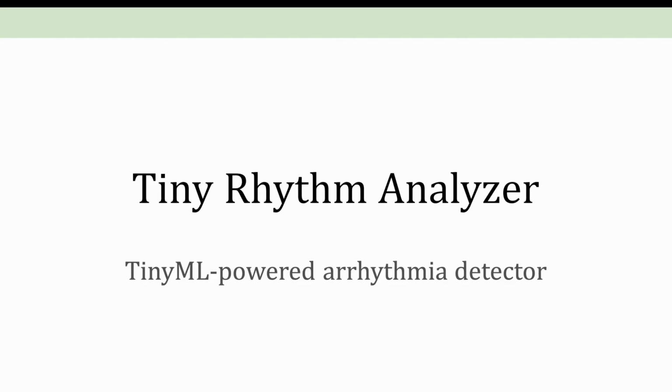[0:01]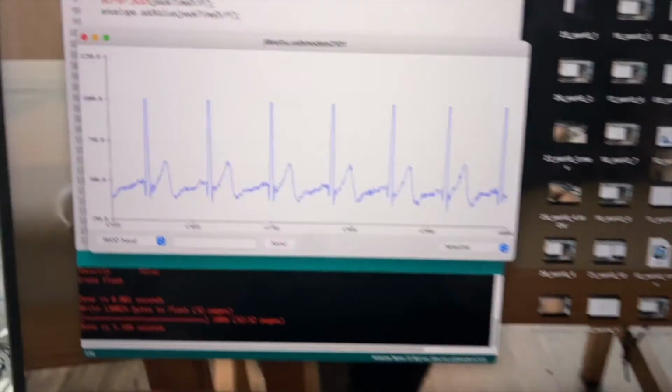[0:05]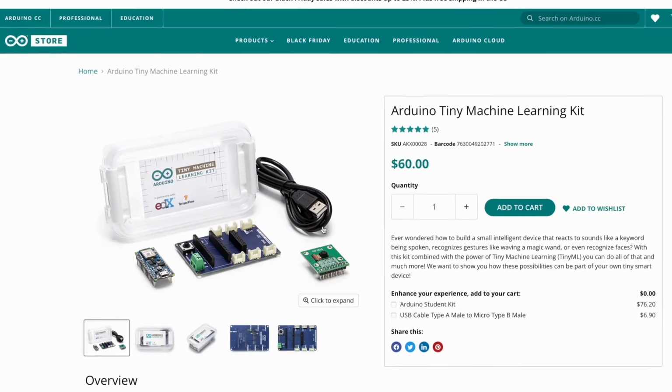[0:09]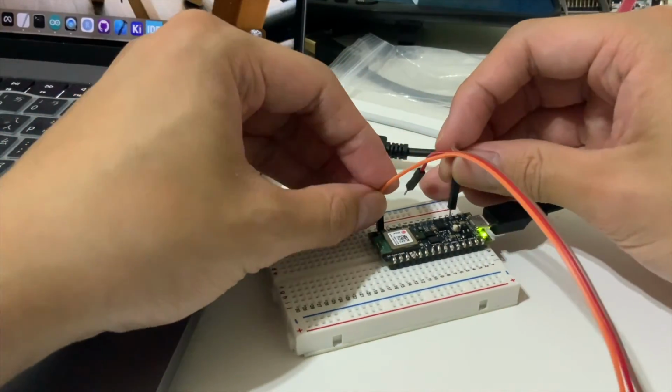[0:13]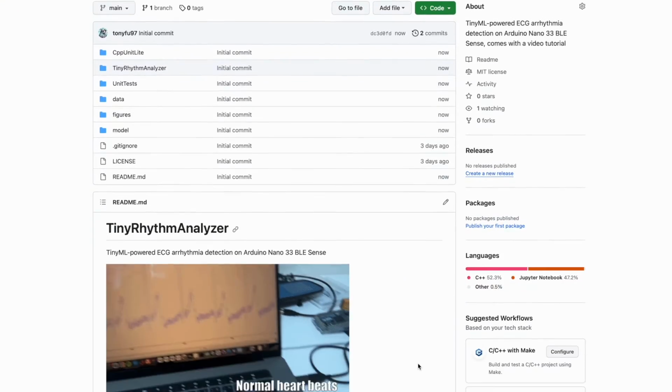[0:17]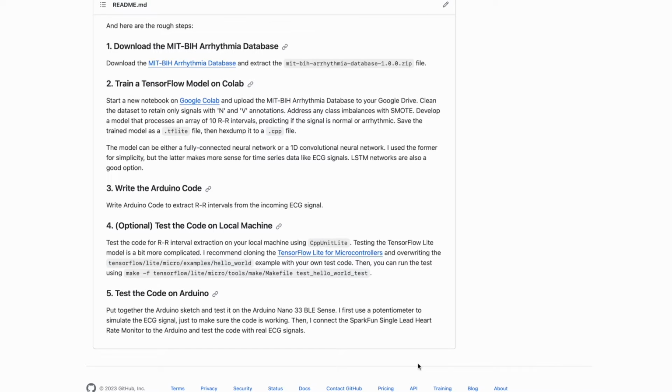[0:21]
Today I'm going to walk you through creating a simple arrhythmia detector using TensorFlow Lite Micro, and we're going to deploy it on an Arduino Nano. It's a very simple project that we can perhaps wrap up in just one afternoon, and I will put all the code I use in this video in the description below, so you can follow along.
So before we begin, we will need a few things. Of course, you will need a computer. I'm using a MacBook, but I think this works on a Windows PC as well. Second, you will need a microcontroller that has TensorFlow Lite Micro support. One such microcontroller is the Arduino Nano 33 BLE Sense, and it is what I'm going to use in this tutorial.
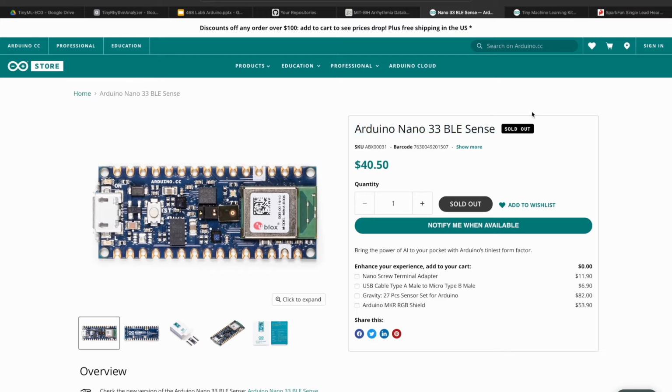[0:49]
But as you can see, this one is sold out. So instead, you can also purchase the Arduino TinyML kit. As you can see, the Nano actually comes with pins in this kit. They also have a dedicated camera module that has TinyML support.
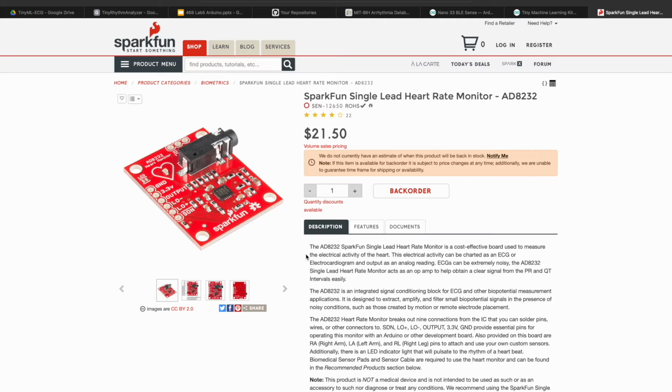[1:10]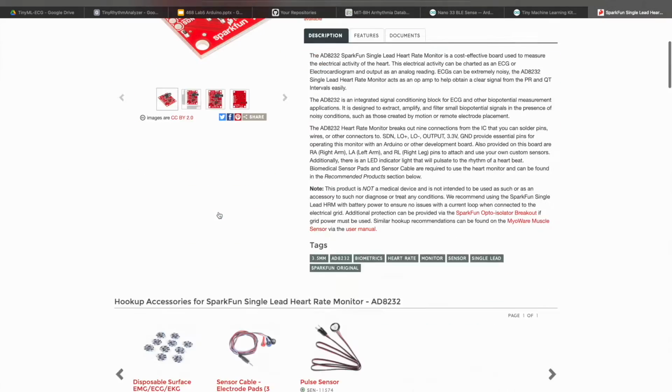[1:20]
We will also need an ECG sensor. I am using the SparkFun AD8232 sensor board in this project. Of course, for that to work, you will need some electrodes, some cables, a breadboard, and some jumper wires too.
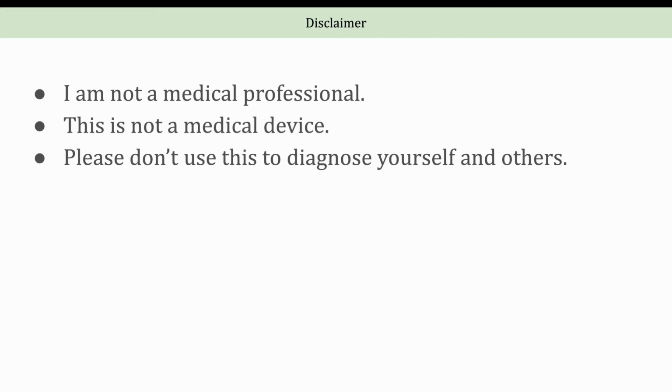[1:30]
Also, I want to be clear, I'm not a medical professional, and this is by no means a medical device. So please consider this as a cool way to dip your toes into machine learning with Arduino, and please don't rely on this for any medical diagnostics.
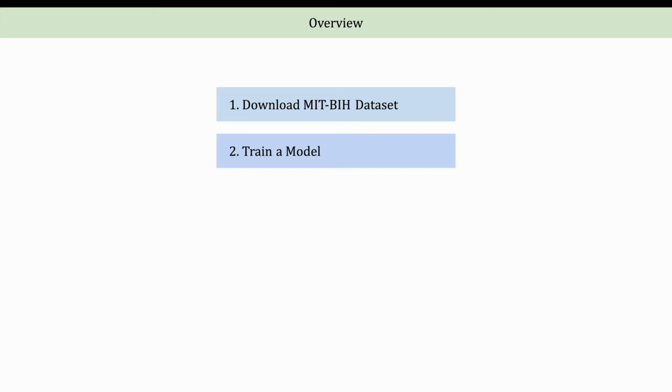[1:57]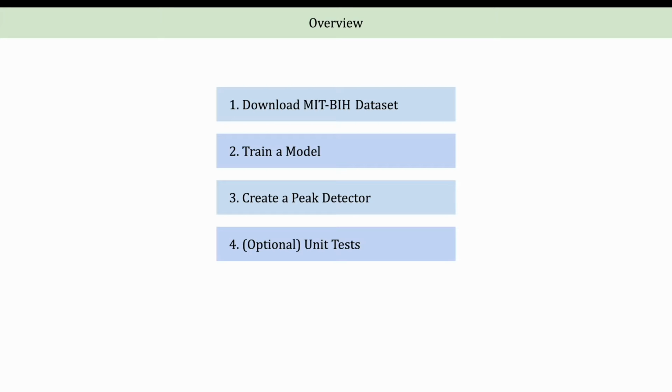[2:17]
So here's how we're gonna do this. First, we're gonna grab some ECG data from the MIT-BIH Arrhythmia database. Then we're gonna train a model on Google Colab with TensorFlow, and we're gonna convert this model into a TensorFlow Lite Micro compatible format. Third, we're gonna do some C++ programming. We will focus on writing classes that allow us to do peak detection in real time. And fourth, we're gonna write some unit tests and run them on our local machine.
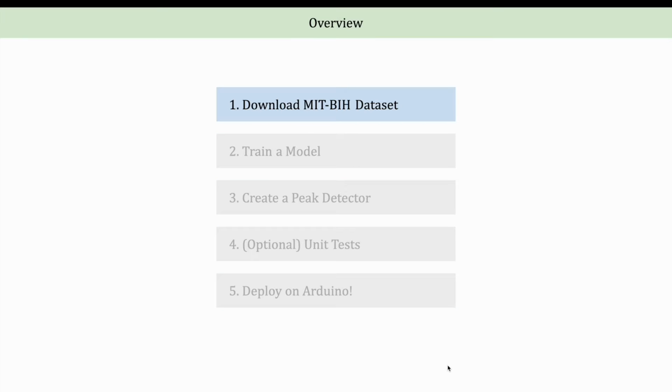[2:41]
This step is totally optional, but I think it's always great to validate our model and algorithm before we move on and deploy it on Arduino. And lastly, we are going to put all the pieces together and deploy the model to the Arduino. And so let's begin part one.
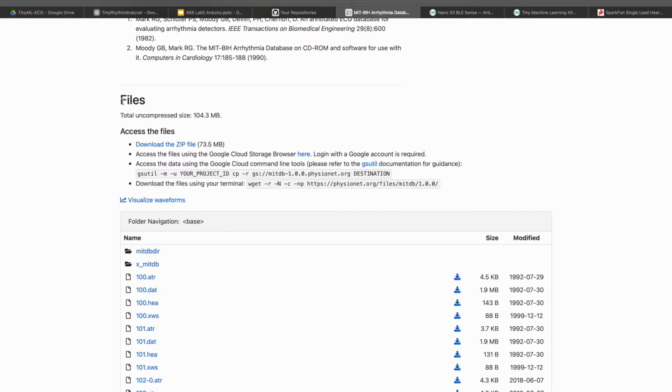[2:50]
Let's begin by visiting the MIT-BIH Arrhythmia database website. We can scroll all the way down to the file section and select download the zip file. And this will download a zip file that contains the ECG recordings and annotations that we need for this project. The website also comes with this waveform viewer.
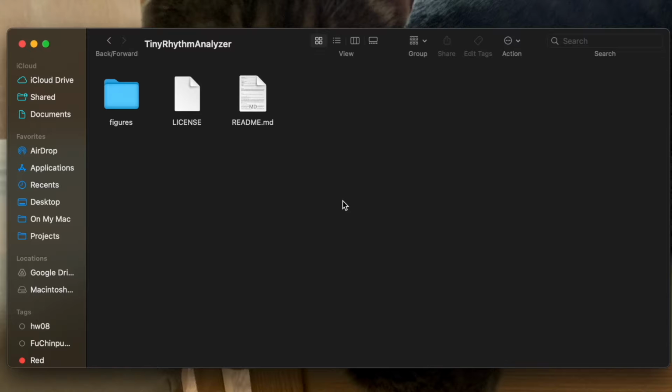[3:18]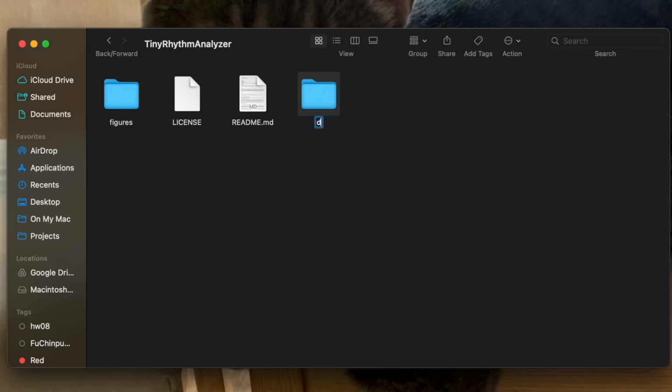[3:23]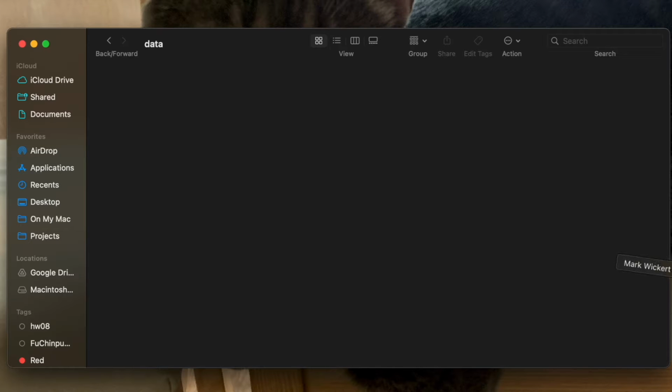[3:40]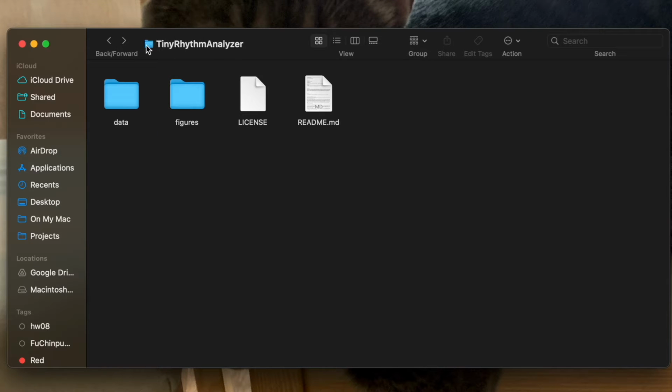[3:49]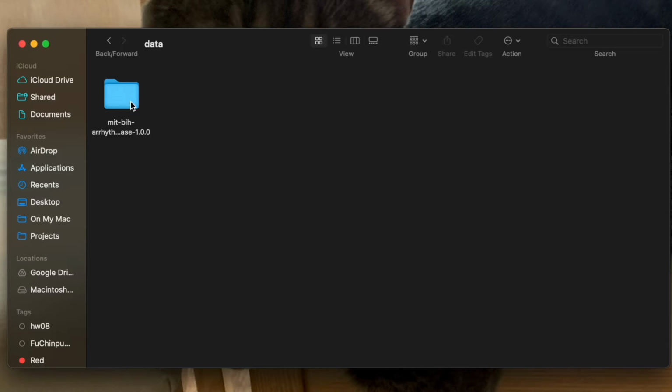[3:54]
If you click on this, it will open a viewer that allows you to visualize all the records contained in this database. So after downloading, unzip the file, and maybe I should create a directory named data. By the way, please ignore all these other things. You don't need this for this project to work. And you can just drop the database folder that you just unzipped into this folder here. So I call my project directory Tiny Rhythm Analyzer, and I just drop in the MIT-BIH database directory.
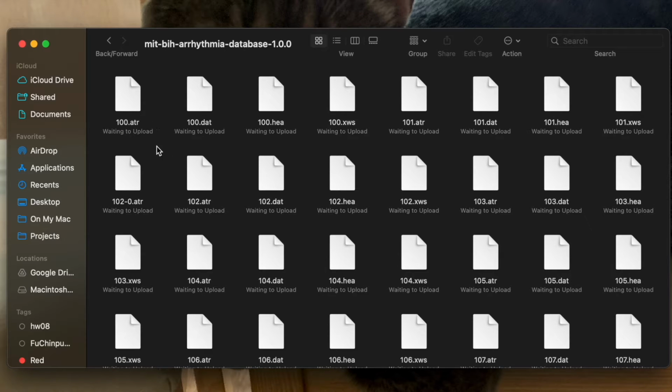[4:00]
You will notice several files. The .dat files hold the ECG signal, and the .hea files are the header information of the recording, and the .atr files contain the annotation, and I think the .xws are for the waveform viewer. We don't really care about that.
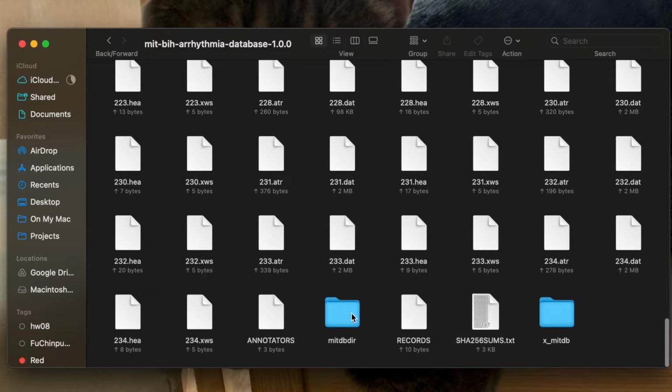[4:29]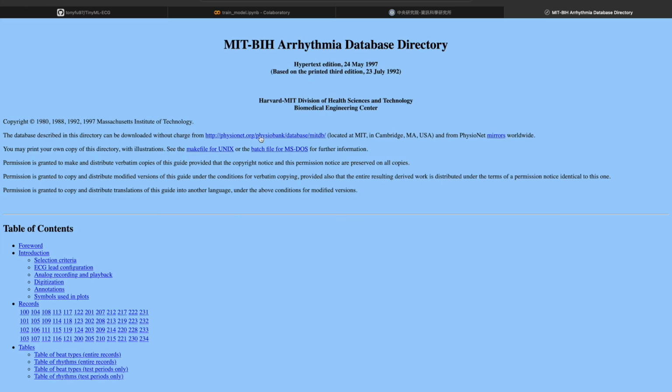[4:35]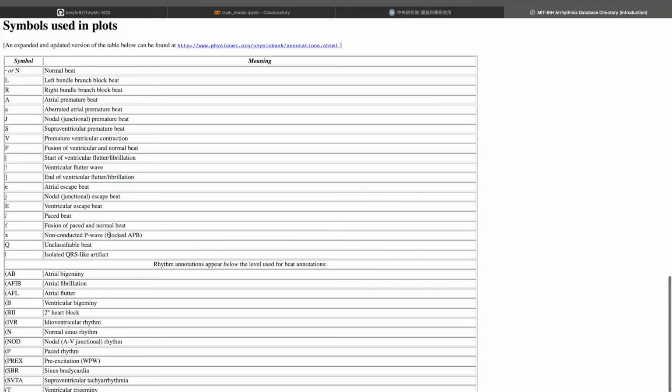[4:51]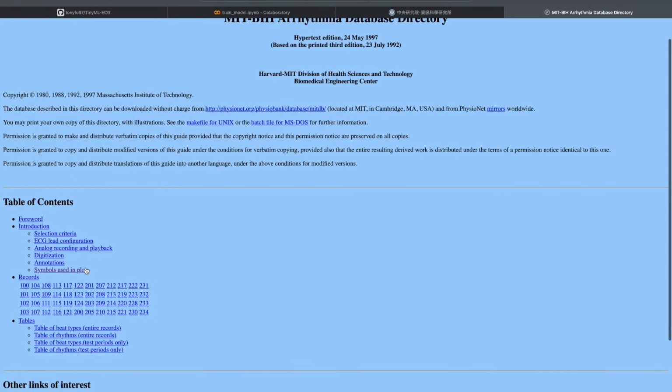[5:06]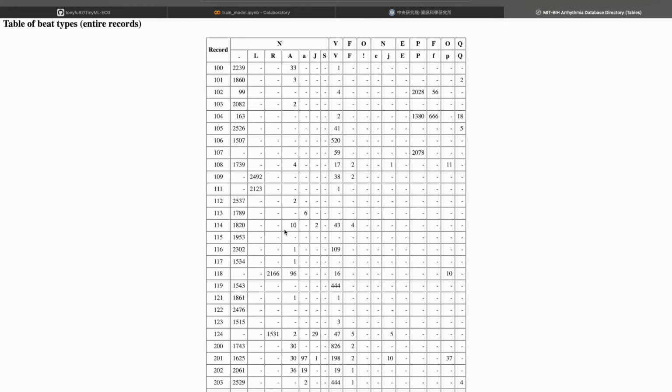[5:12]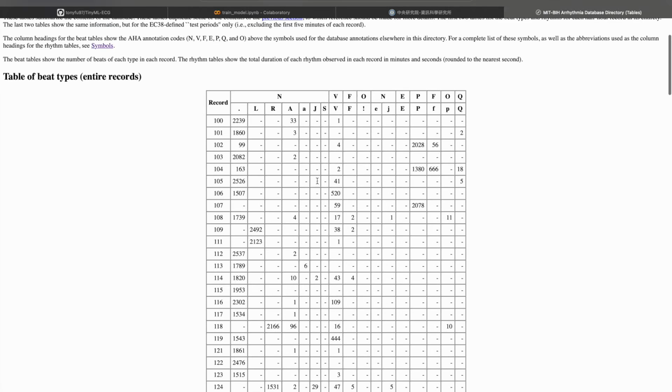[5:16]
And also, we just scroll all the way down. Take a look at the MIT-DB-dir folder, and if we click on this, it actually opens sort of an information guide to the database. You will find details about the database structure and annotation. I will pay particular attention to the symbols used in plot, and this will tell you the meaning behind the annotation codes. For example, N is for normal beat, and V is for premature ventricular contraction. Let's go back. I will also pay particular attention to the table of beat types. It provides a count of each type of annotation across the records.
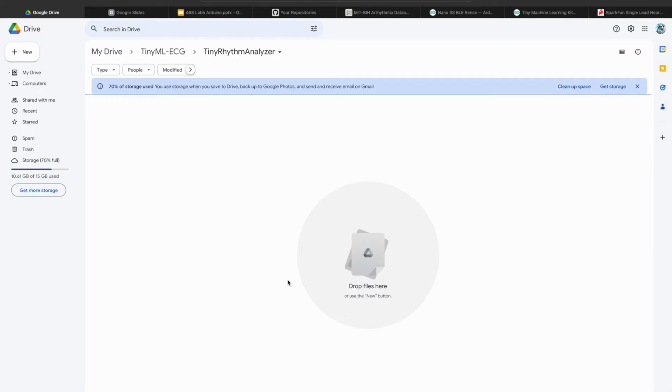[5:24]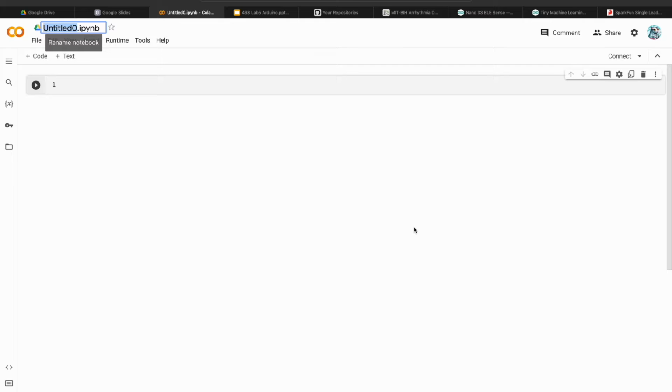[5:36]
So now it's step 2, which is to train a model on Google Colab. So let's start by creating a new folder in Google Drive. I'll call it Tiny Rhythm Analyzer, and within that folder, let's open a new Colab notebook. And you can rename this notebook to be something meaningful. Let's call it train model.
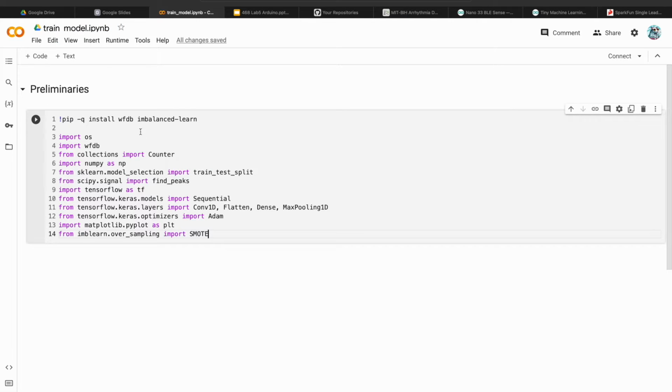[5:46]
So here I added some code to import the libraries that we need. Some of them you might already know, like NumPy, Scikit-learn, TensorFlow. Those are common. Some might be new to you, like WFDB, which stands for Waveform Database. It is needed to read the ECG signal contained in the MIT-BIH database. And imbalanced-learn is a library that handles imbalanced datasets by resampling them. Here, let's run them.
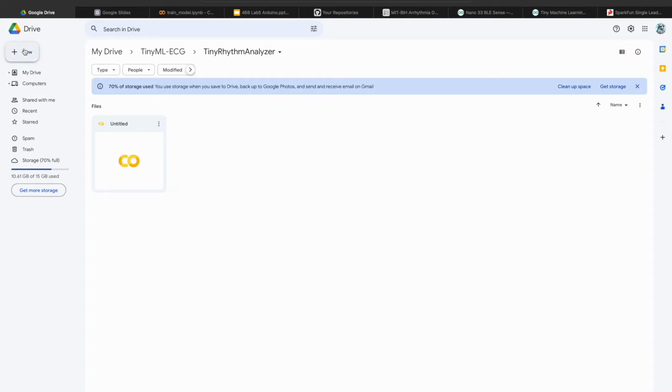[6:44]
Initially, it might take a while for it to connect to a kernel. And the next thing we want to do is to have this notebook be able to access the ECG data that we just downloaded. So what you want to do is go back to your Google Drive folder and upload the MIT-BIH database. And this might take a while, so let's go back to our notebook now.
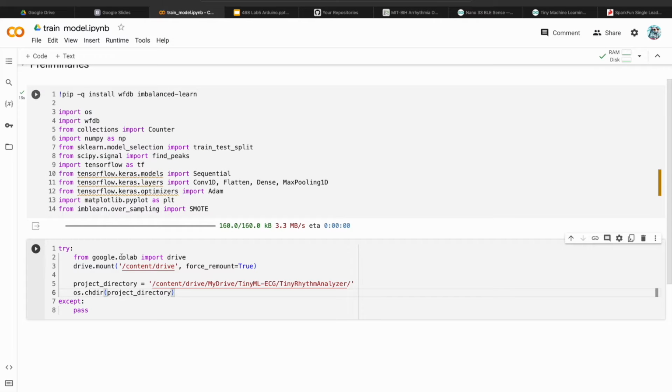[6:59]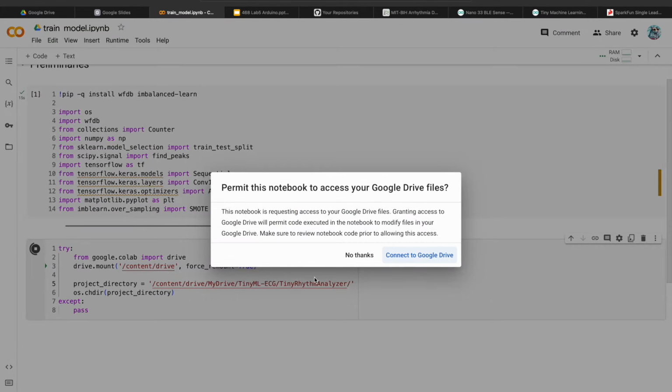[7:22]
And here, another thing we need to do, so here I add this code. It's to mount the Google Drive on this notebook, so that it can access whatever files that we have on the Google Drive. And remember to change this path to match the one on your Google Drive. And now we can run this code, and a window might pop up like this. And remember to click agree on everything. I'm just gonna fast forward.
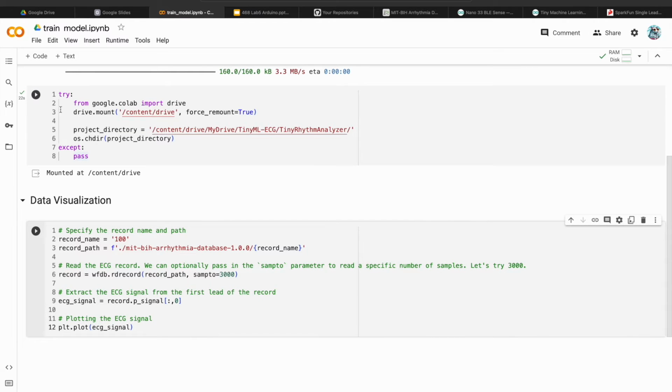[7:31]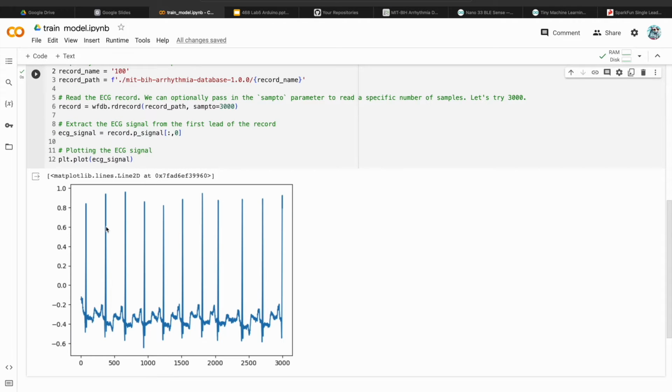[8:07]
And so once the Google Drive is mounted and make sure that all the files from the MIT-BIH database are uploaded, it's time to visualize our data, do some data exploration. We are going to use the waveform database library to read the ECG signal and its associated annotation. And I have added some code over here to read record 100 up to the 3000th sample, and let's run this code. And as you can see, the waveform is being plotted right here.
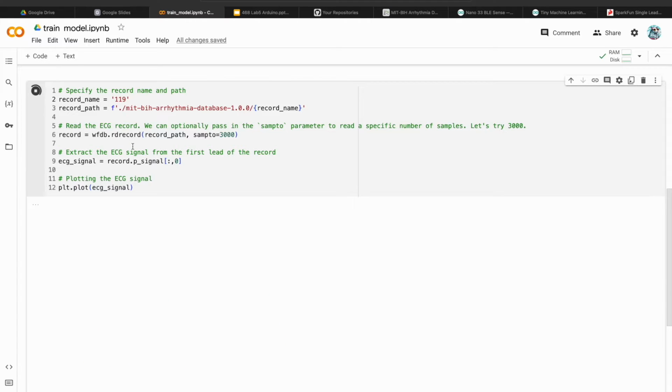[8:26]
So this looks like a pretty normal ECG signal. We can change a variable here to another record. For example, record 119. Let's see. Now, it doesn't really take an expert to see something is wrong with this ECG record. It's not really rhythmic like the previous one.
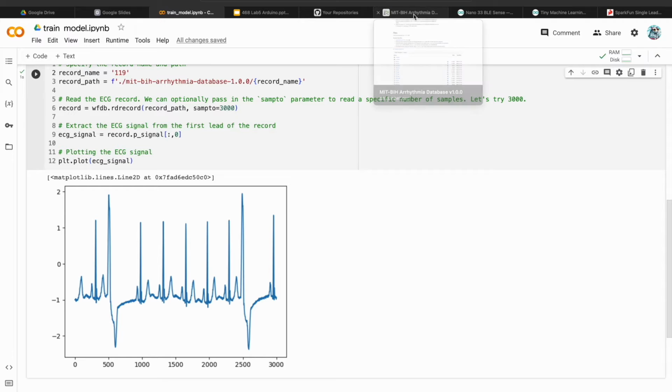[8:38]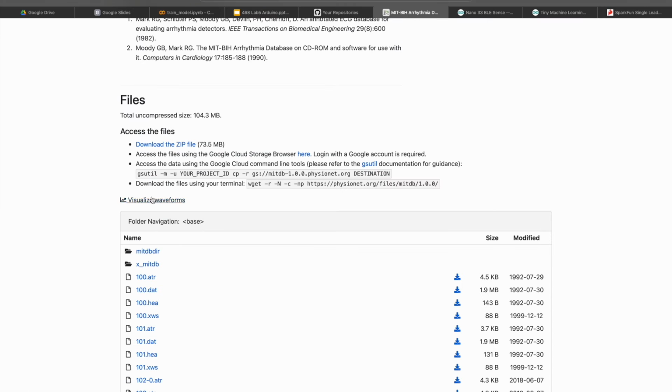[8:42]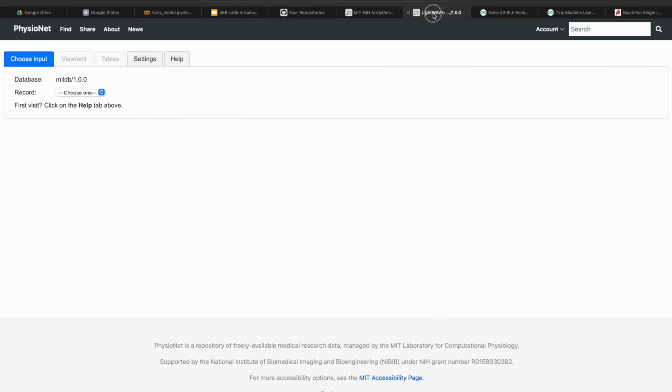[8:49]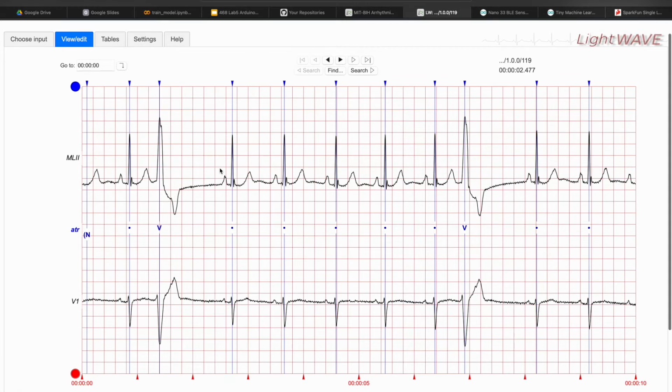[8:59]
So let's go back to our MIT-BIH and open the waveform viewer and go to record 119. And you will see the same signal being plotted right here. And you can see that this is the case of premature ventricular contraction, PVCs. This is the type of arrhythmia where the ventricle contracts prematurely and this disrupts the normal rhythm. In this project, we will make it our goal to detect this kind of arrhythmia with our model.
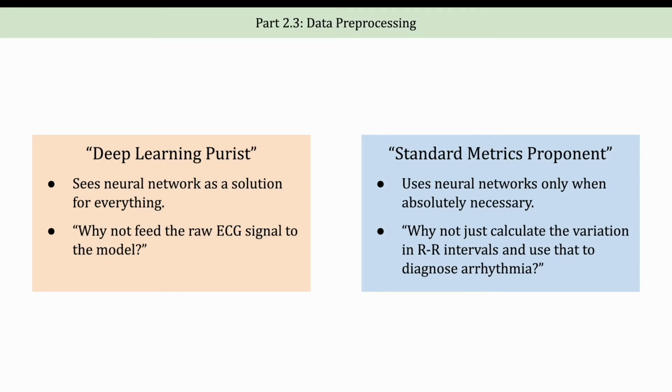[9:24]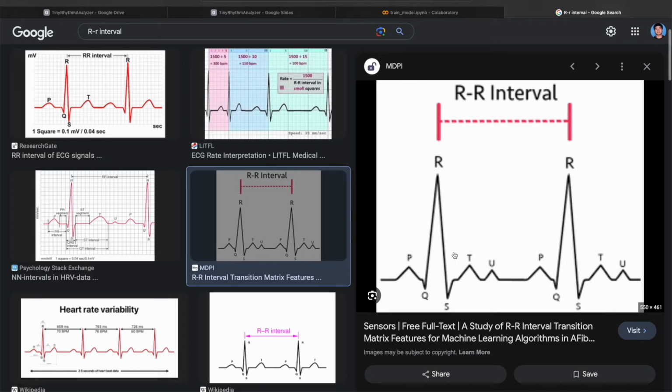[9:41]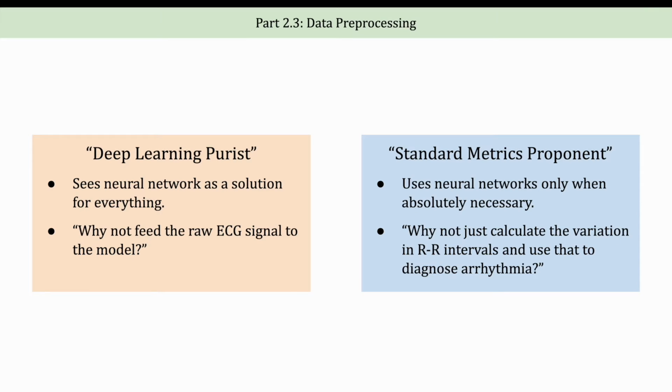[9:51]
And as it turns out, we need to do quite a bit of pre-processing to our ECG signal before we can feed it into our model. We're going to extract the RR intervals from the signals to use them as features. If you don't know, the RR interval is the time between two consecutive R peaks. And R peaks are the highest points in the ECG signal. And I can already anticipate some criticism of this approach.
The first might come from what I call the deep learning purists. These are folks who see neural networks like a Swiss army knife. They see it as a solution for everything. So if you've got a problem, they've got a neural network. And when they see this tutorial, they may ask, why not just feed the raw ECG data to your model? Deep learning is all about discovering features from data, right? And I would say yes, they have a point.
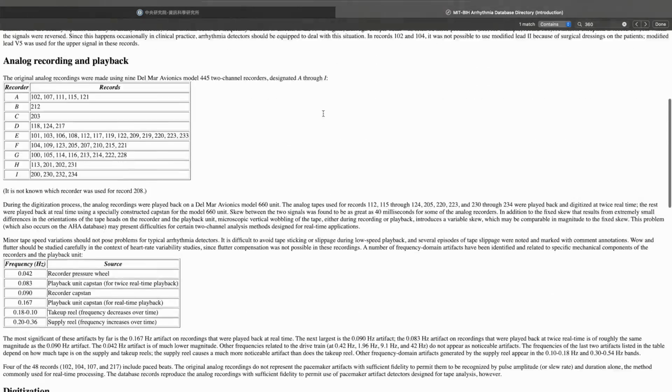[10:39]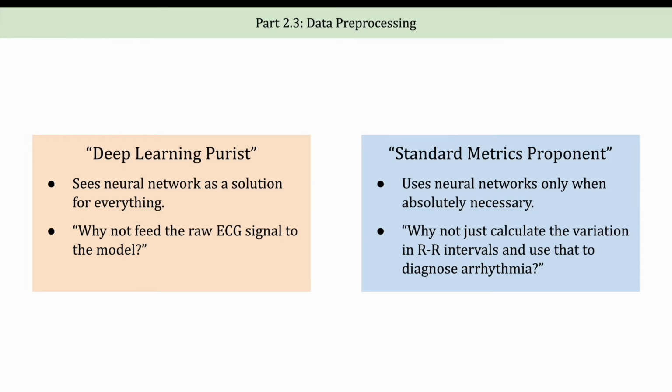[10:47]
I believe it's certainly feasible to train a model to recognize the arrhythmia from the unprocessed ECG signal. However, if you take a look at the MIT-BIH database sampling rate, it's 360 hertz, and consider the sheer volume of samples needed for a model to accurately determine a beat's normality, right? How many do we need? 100, 1,000 or more? It's not really clear, and it's going to be substantial. So this would inevitably bloat our model size and increase our inference time too. And remember, we are going to implement this model on a microcontroller with limited capacity.
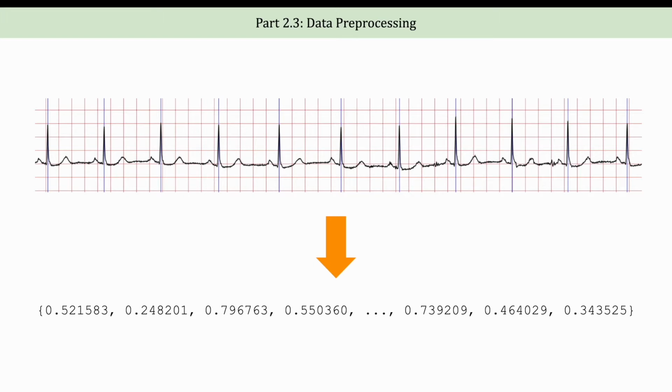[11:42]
So, downsampling is another option to bring down the sample size. But if we do that, we might risk missing some of those really sharp R peaks. And so my argument to use the RR interval is that, clinically speaking, it is an established metric for arrhythmia detection. So by encoding the ECG signal into a sequence of RR intervals, we have significantly compressed the data and circumvented the pitfall of overloading our model with redundant information.
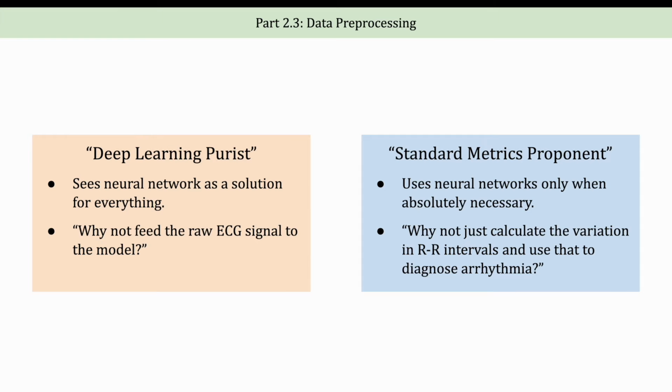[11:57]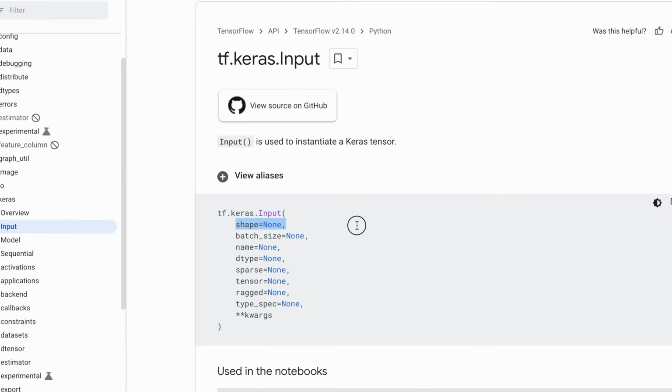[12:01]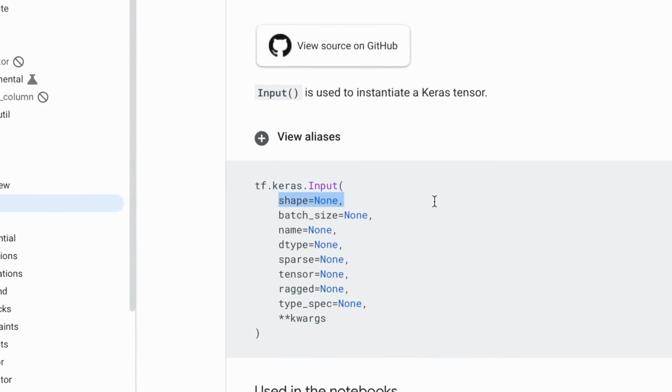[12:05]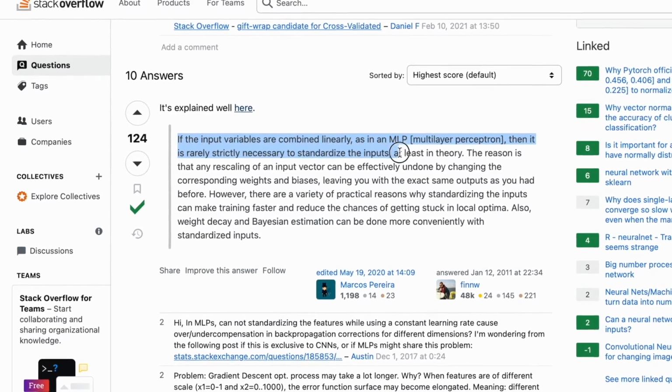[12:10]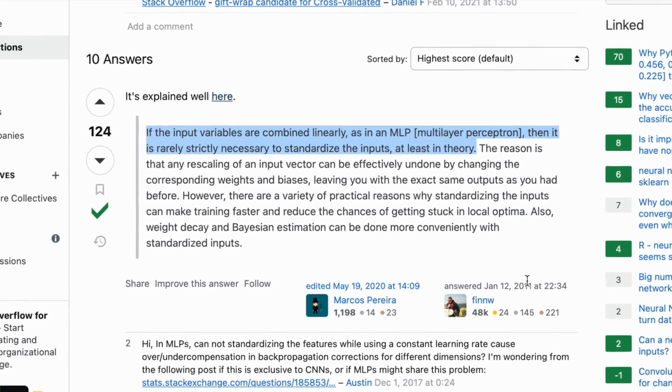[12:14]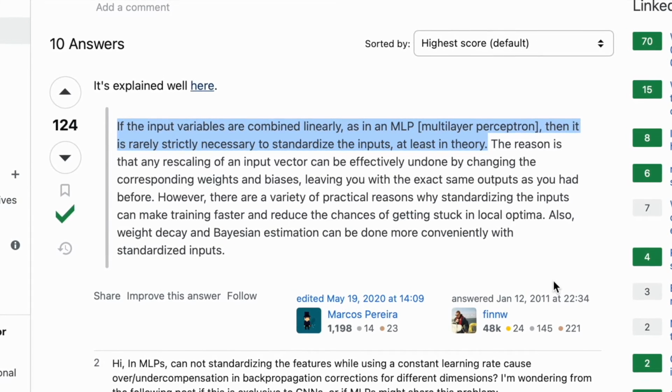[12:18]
Moreover, we can standardize this interval to be a consistent length and scale. The former is really necessary because TensorFlow models require a fixed input size. The latter, which is a fixed scale, is crucial as it helps with the model's tolerance to noise and signal variation. And the second type of critique would come from what I would call the standard metric proponents.
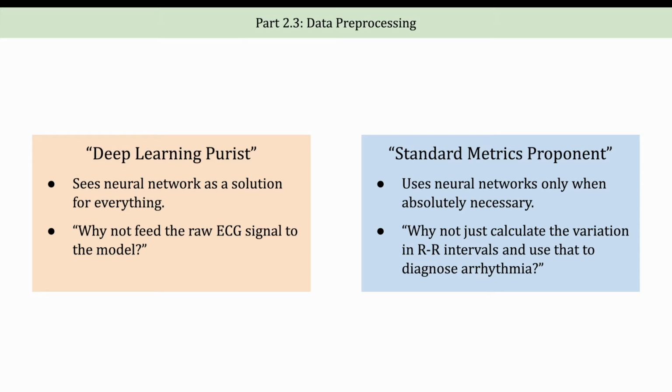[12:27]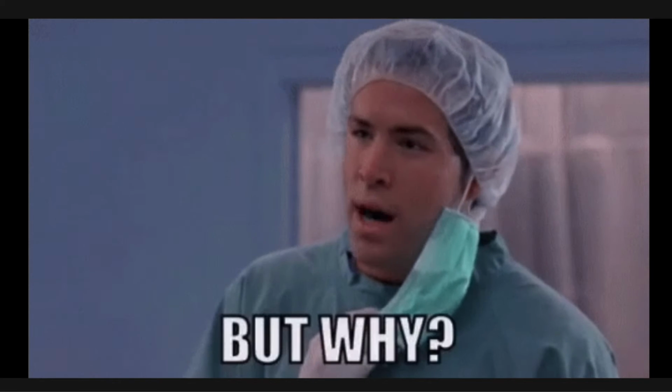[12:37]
These are really cautious folks who use neural networks only when absolutely necessary. So when they see this project, I imagine that they would ask, why not just calculate the R-R intervals and then use that as a feature? We can take the standard deviation of the R-R interval, and that may perhaps tell us how arrhythmic it is. And I believe that's a valid question too.
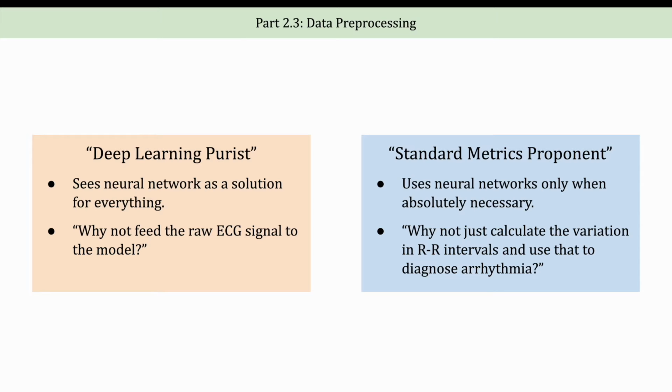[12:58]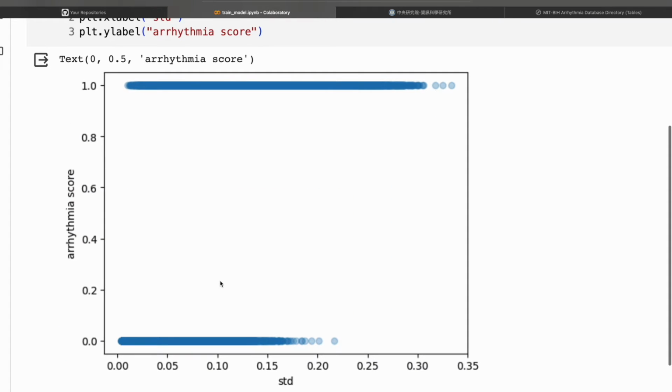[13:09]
But in order to respond to that kind of criticism, allow me to jump ahead to some of the data that I saw when I tried this method. So right here is a plot that I made. The x-axis is the standard deviation of the R-R intervals. The y-axis here, if it's 0, then the ECG signal is normal, and if it's 1, it's arrhythmic. As you can see, although you can argue from this plot, definitely some of these arrhythmic ECG signals have a more varied R-R interval. But see how much the overlap is, right?
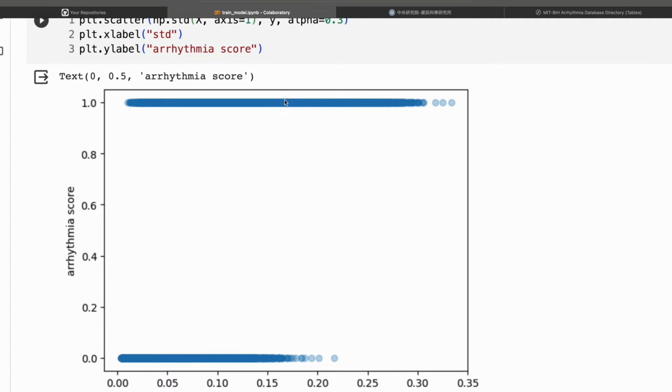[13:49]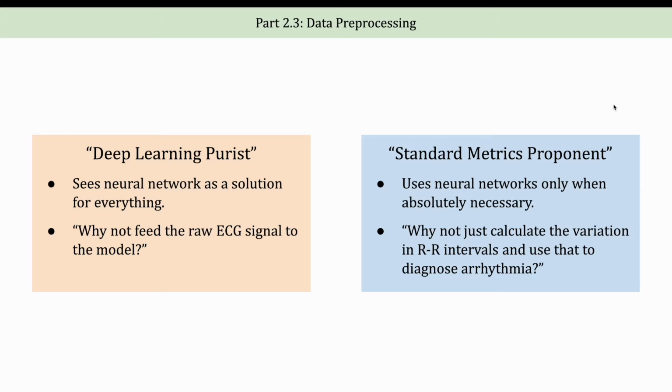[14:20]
If we just use a single threshold to determine if a record is arrhythmic or not, then we might have a lot of false positives or false negatives. So I just think that a simple threshold model may not be really effective. A neural network has the potential to extract more nuanced patterns within the data that a single metric might miss. And of course, please feel free to leave any criticism, critiques, feedback in the comments below. But this is what we are going to use for this tutorial. We're going to extract 10 R-R intervals from the ECG signals, use them as features and feed them into our model, and it will tell us whether the ECG signal that we saw is normal or arrhythmic.
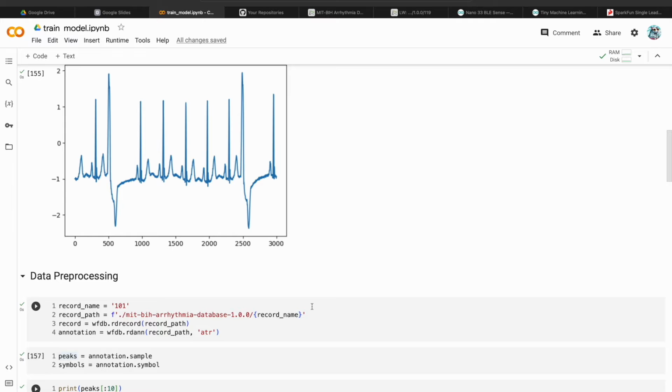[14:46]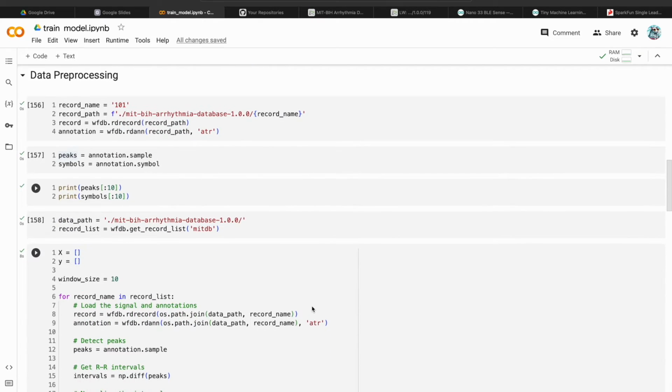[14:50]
So let's come back to our notebook, and if you scroll down, you can see that I have added a few more lines of code here. We're really lucky that we don't have to do any peak detection on our MIT-BIH dataset because the expert has already annotated those peaks for us. All we have to do is read those annotations, and we can do that with the rdann method. This will give us a variable named annotation, and it comes with a couple of fields. Two of them that we care about are sample and symbol. Let's print it out and see what they are.
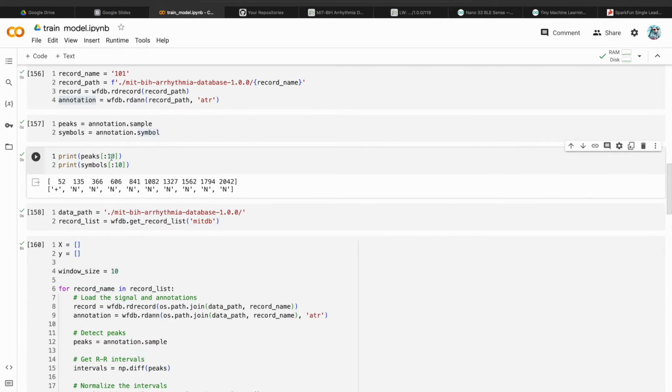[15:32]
So I print the first 10 of each, and as you can see, the samples are the sample numbers where the peaks are found, and the symbol tells us what kind of peak they are. This plus sign right here, I believe, means that this is a pacemaker peak, and of course, we want to filter that out from our training data. And this N here means that there is a normal R peak that happens at sample number 135.
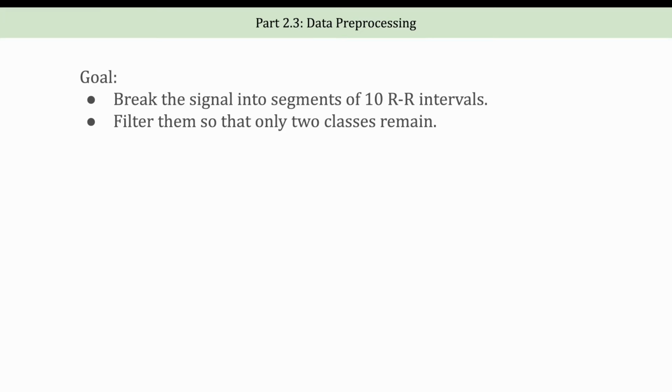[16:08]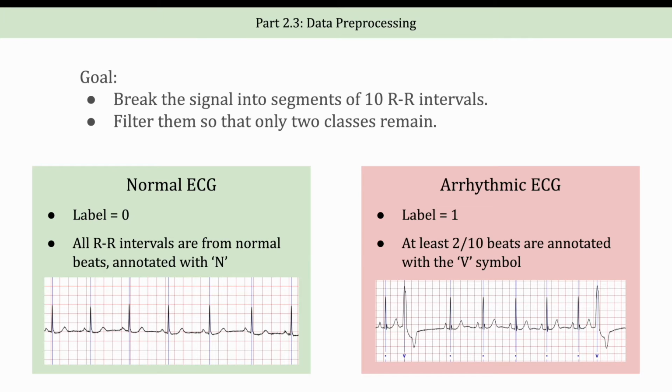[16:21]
So the goal of data preprocessing is to break up the signal into segments of 10 RR intervals and then filter them such that there are only two classes remaining. The normal class contains segments of 10 consecutive RR intervals from normal beats annotated with the N symbol. So this is a pretty normal beat, and I know there are only 6 intervals here, but pretend that there are 10 here. This signal is something that we will categorize as a normal ECG signal with a label 0. And the arrhythmic class, again, contains segments of 10 RR intervals, but within those 10 intervals, at least 2 of them come from beats not annotated with the N symbol, and they will be given a label 1.
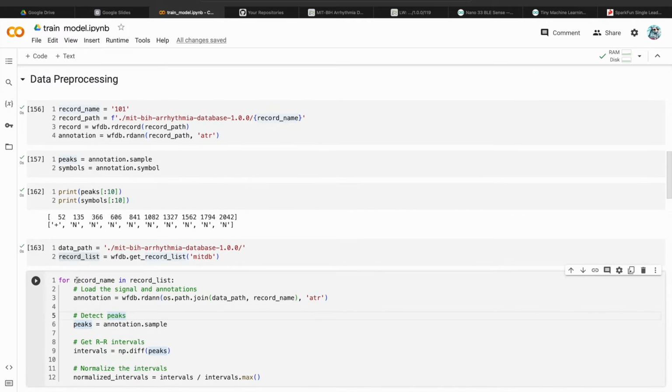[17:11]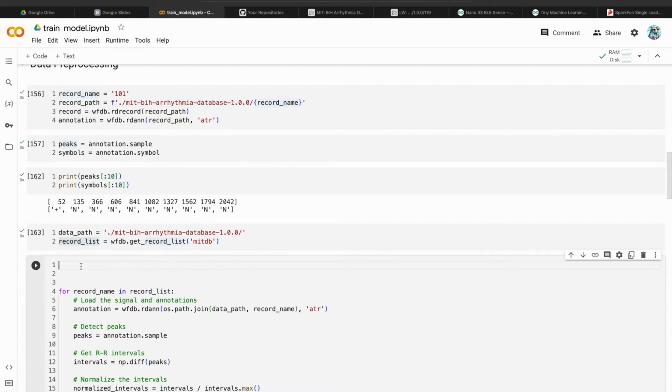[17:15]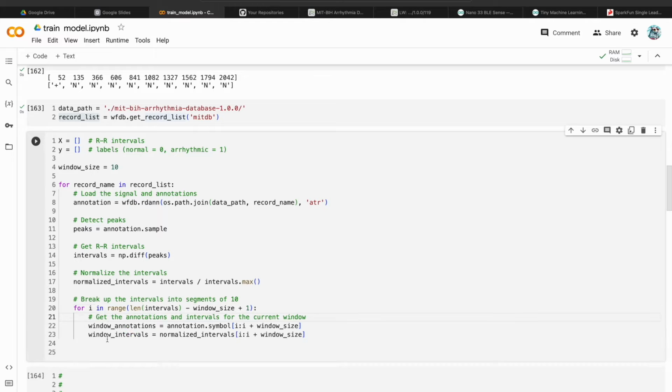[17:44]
So let's come back to this code, and outside of the for loop, let's create 2 empty lists to hold the x and y values. The x will hold the R-R intervals, while the y will hold the labels. Let's also specify our window size. Let's set it to 10. Feel free to try other numbers. And now we break up the intervals into segments of 10. We will need a for loop, and then we will get the annotation and intervals of the current window, and then we will count the abnormal beats, and if the current window matches the criteria of one of the classes, we will append it to our list.
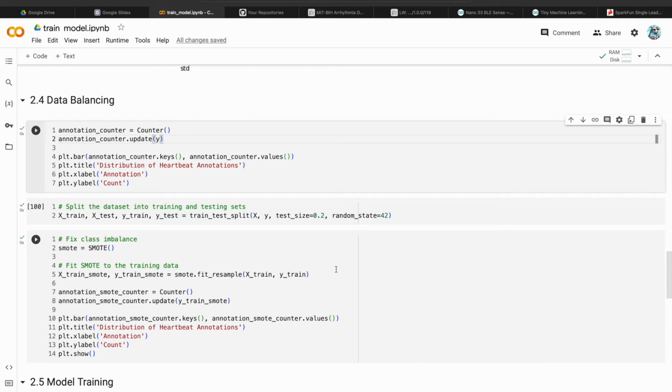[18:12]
Let's run this cell, and then here you can see how I convert them into NumPy arrays. There's one more thing that we need to address, that is data imbalance.
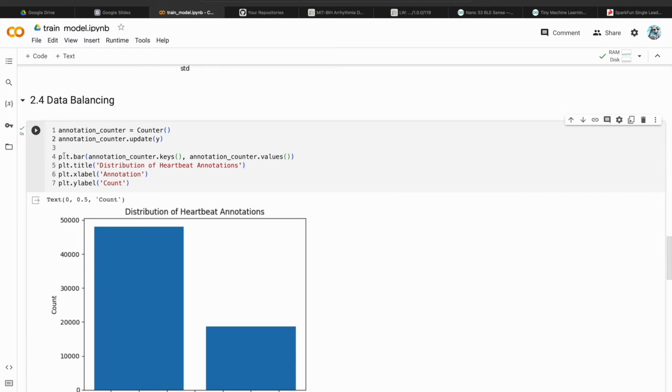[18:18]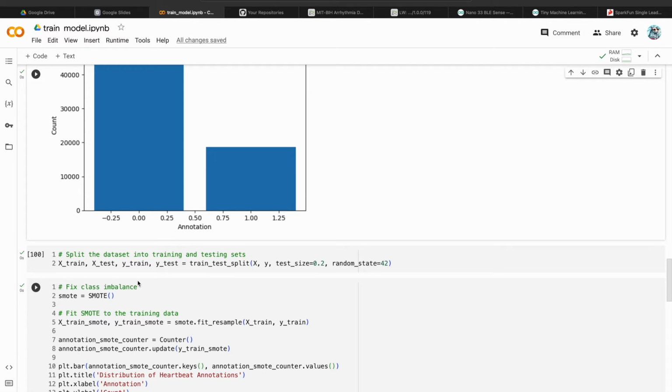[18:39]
So here you can see that I added more code here, and if we plot out the number of data belonging to each category, we can see that there are about twice as many normal heartbeats as arrhythmic heartbeats, and so we will need to address that. But before that, let's split the data set into training and testing sets. We will specify 0.2 here to split the data into 80% of data for training and 20% for testing.
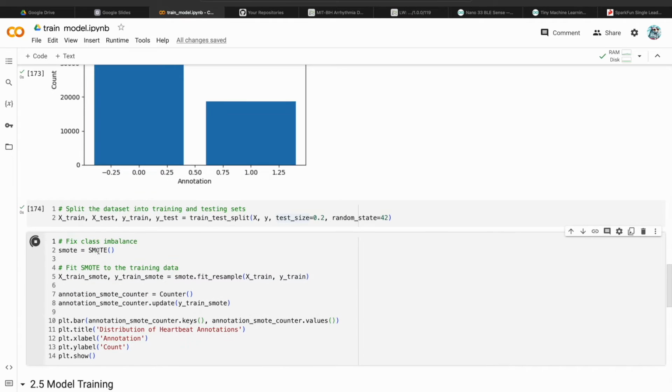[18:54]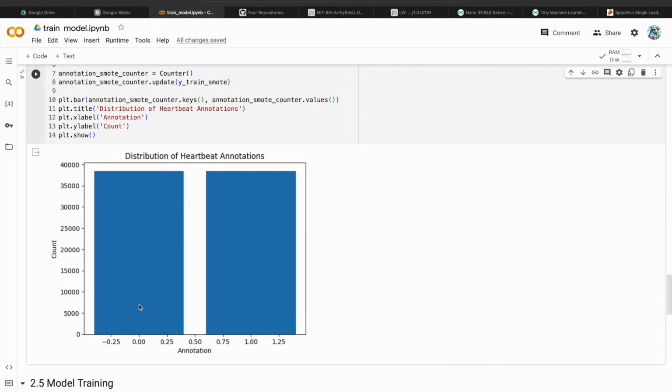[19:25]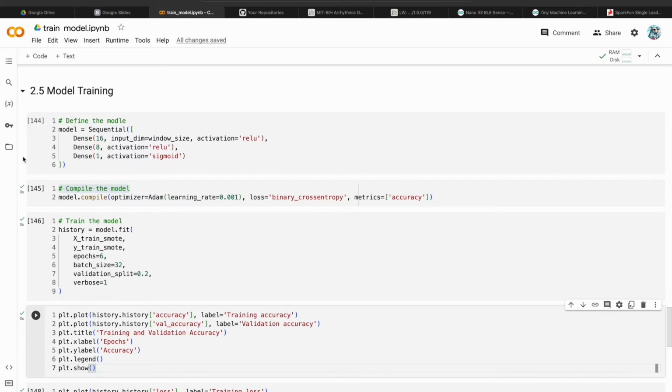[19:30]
And then here we apply SMOTE, which stands for synthetic minority oversampling technique, I think. And then we will apply it to only the training set. We don't want to apply it to the whole data set because SMOTE works by generating synthetic samples from the minority class. And so if we generate them from the testing set, we are essentially leaking information from the testing set into the training set. And then, as you can see, now the data is balanced. And so we can finally train our small TensorFlow model.
I'm going to create a simple 3-layer neural network for classification. The first is a fully connected layer, aka the dense layer. I have 16 neurons in it. And the second is another dense layer with only 8 neurons. And the last layer is simply a sigmoid activation layer, and it's used for binary classification. You would argue that a Conv1D neural network or an LSTM neural network might be more effective. But for the sake of simplicity, I'm just going to use this simple 3-layer neural network for this tutorial.
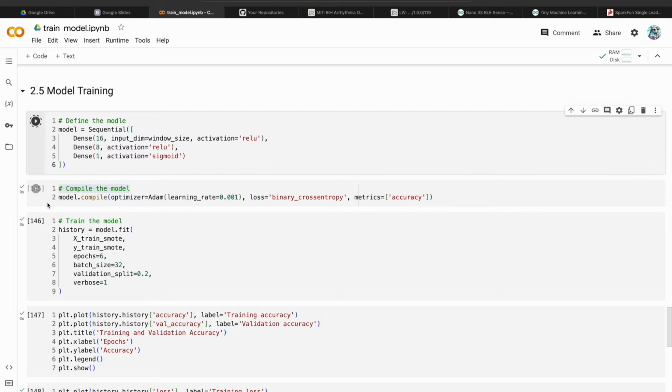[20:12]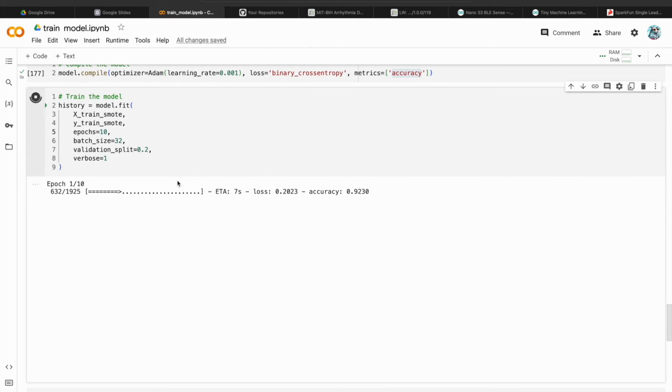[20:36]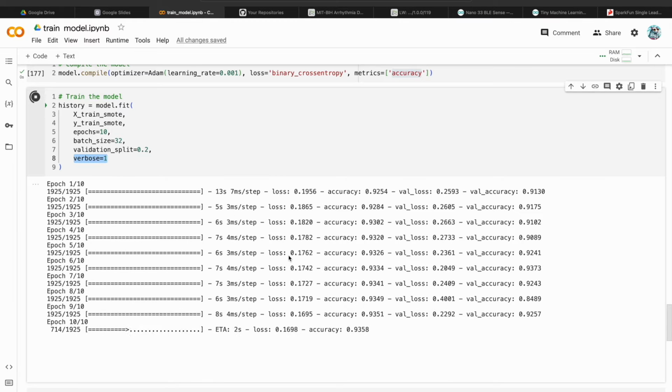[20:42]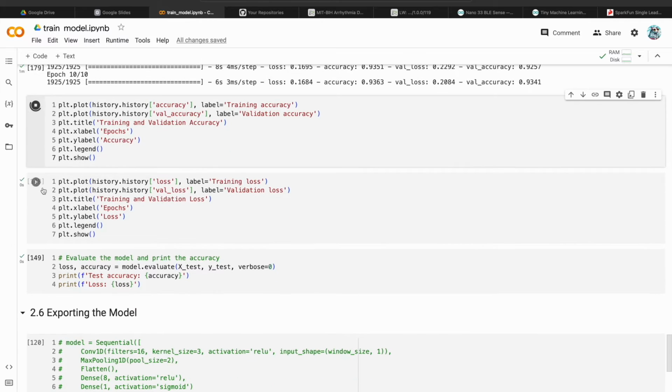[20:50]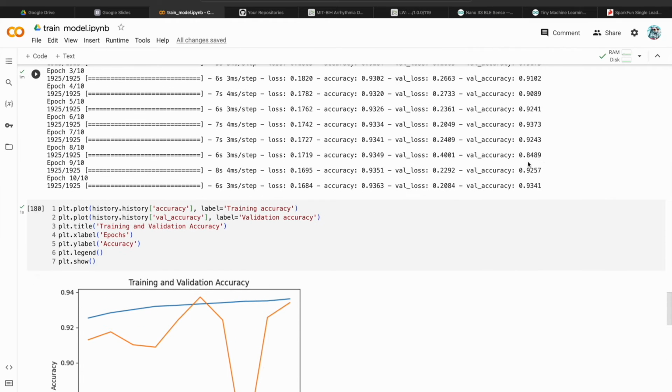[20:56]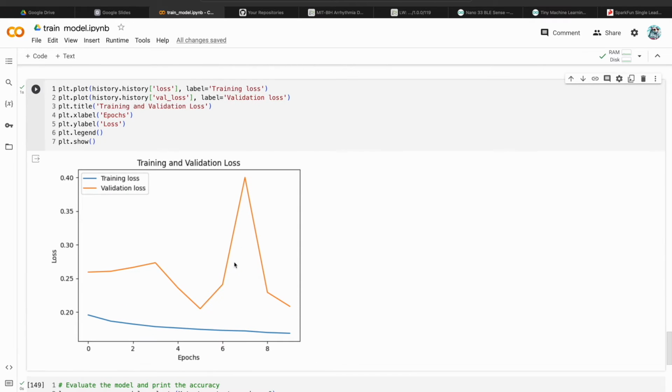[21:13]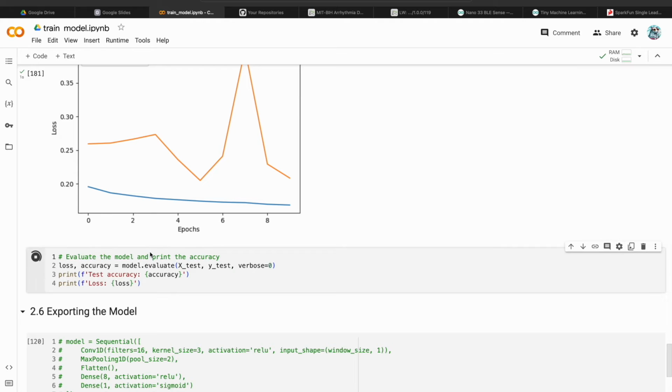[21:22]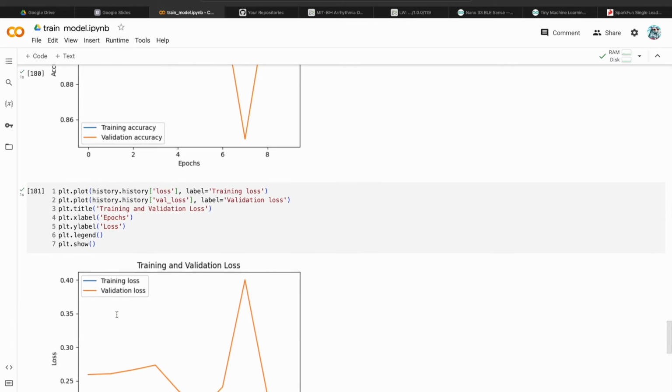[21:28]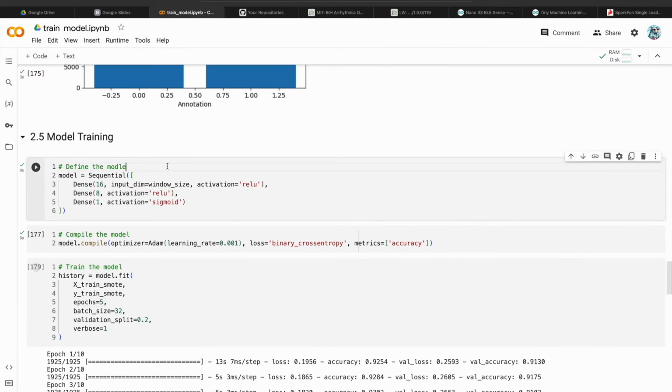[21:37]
And as you can see here, roughly around the 8th epoch we find a significant dip in the accuracy. And this kind of suggests to us that there has been some overfitting going on after this point. And the validation loss here seems to suggest the same. And so let's take a look at the test accuracy. It's about 93. It's not too bad, but I think there might be some overfitting going on. And so I'm just going to decrease the epochs to 5 and then retrain the whole thing.
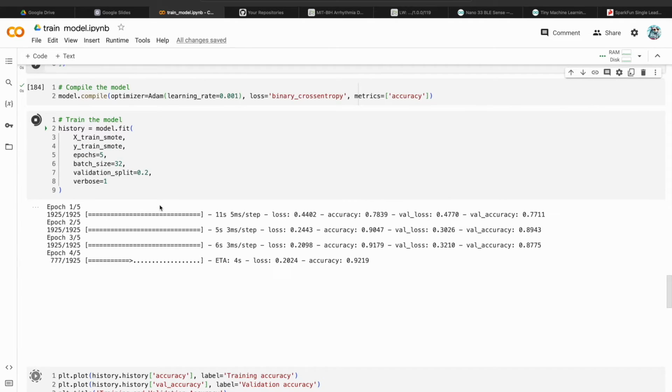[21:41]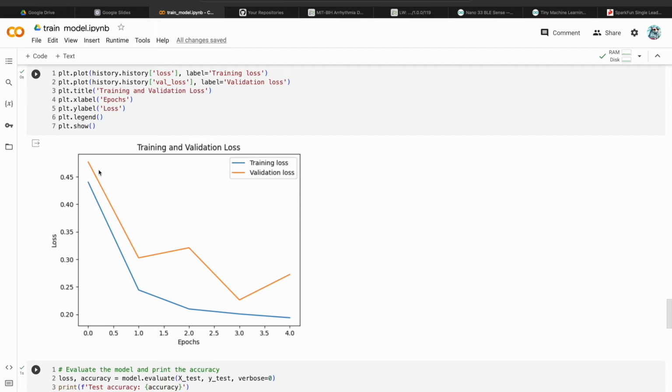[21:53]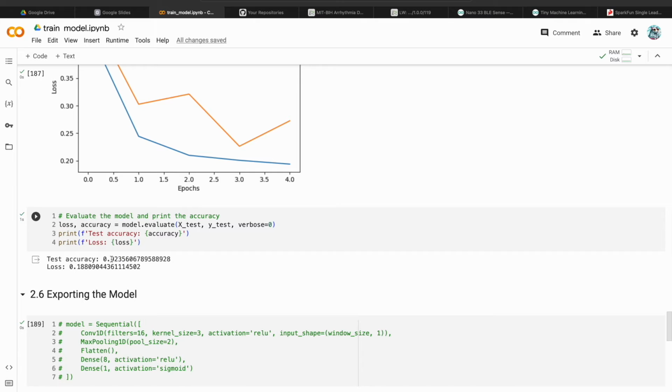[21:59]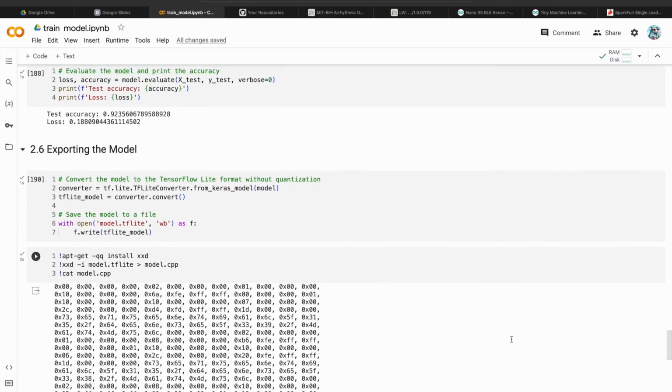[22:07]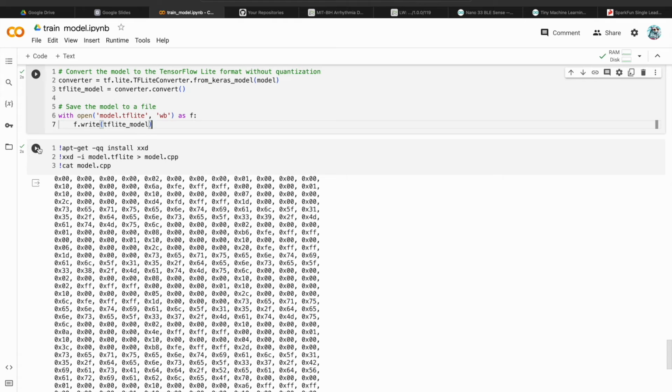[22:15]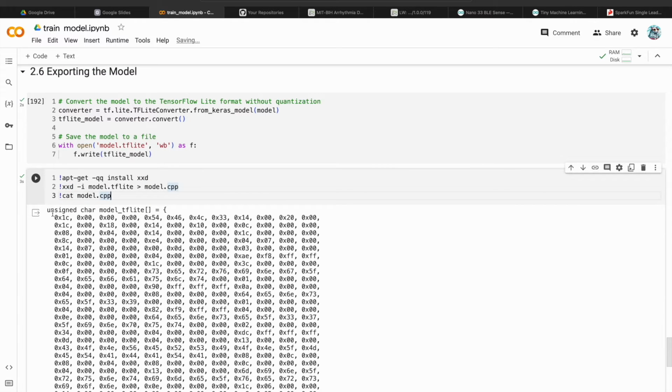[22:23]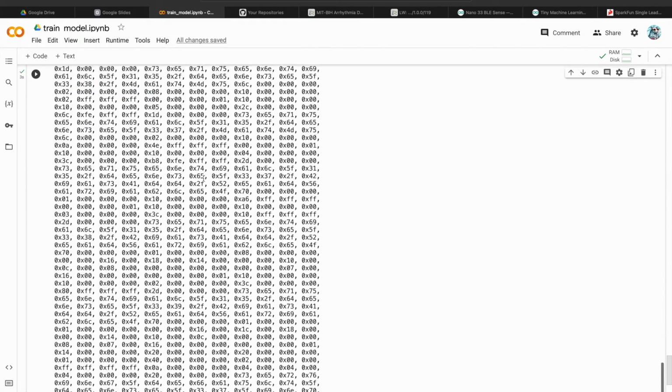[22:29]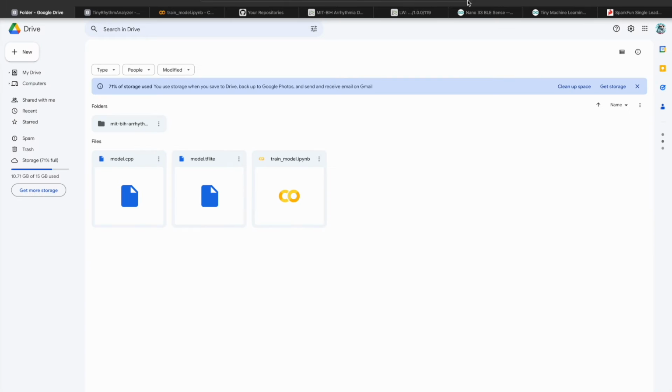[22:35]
And as you can see, both training and validation accuracy steadily increase over time, and the loss also steadily decreases over time. And the accuracy is about 92, so not too bad. But anyway, feel free to try out your own model. But what we have to do now is convert the model into TFLite format, and we also have to hex dump it using the xxd command. So this will output it into a TensorFlow Micro compatible format. And at the end, you can find the size of this model. It's about 3428 bytes. You will find those two files here.
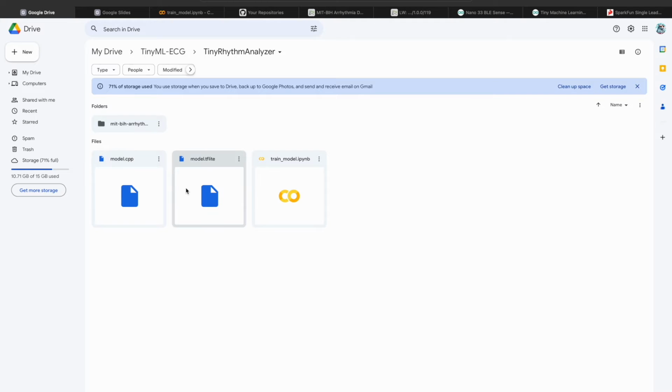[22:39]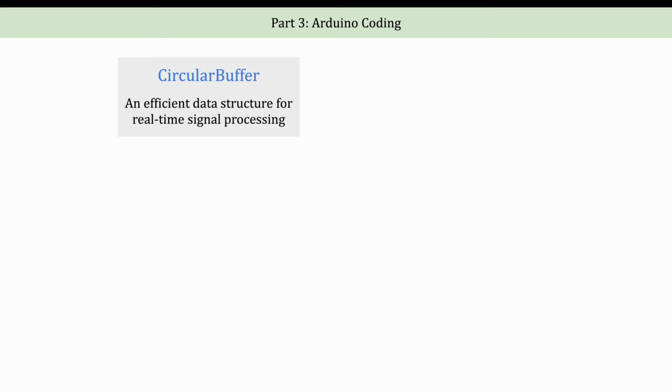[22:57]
And so that concludes step 2. And now we are up to step 3, where we can write some C++ code in Arduino IDE to create a peak detector. I prefer my code to be modular, so we will create 4 separate classes. The first class is the CircularBuffer. This is a commonly used data structure in real-time signal processing. The key is that the new data are inserted at the position of the oldest data, and so thereby saving us time by eliminating the need of shifting the whole array.
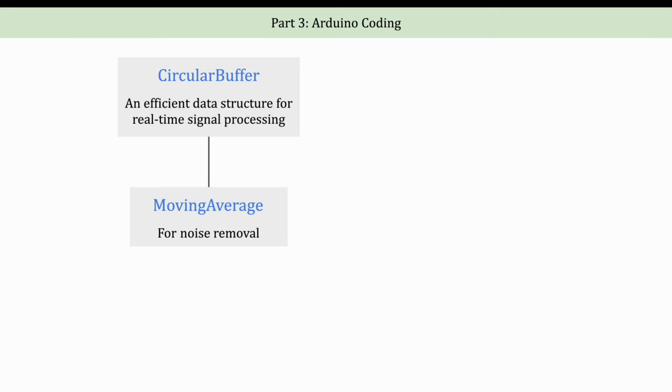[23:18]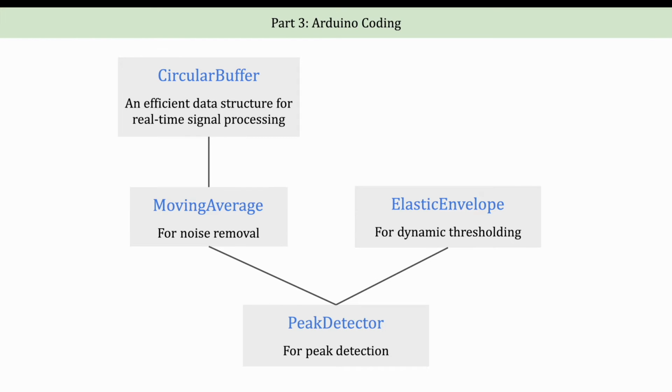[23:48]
And the second class is the MovingAverage class. This class is useful for removing noise, and it will use the CircularBuffer class that we just created. The third class is what I call ElasticEnvelope. This is useful for tracking the moving maximum and minimum of the signal, and it's useful for peak detection where we need to define dynamic thresholds that are robust over a wide range. And the fourth class is the PeakDetector. This is the key class that we will use in our Arduino sketch. It uses both the MovingAverage and the ElasticEnvelope classes to identify peaks in the signal.
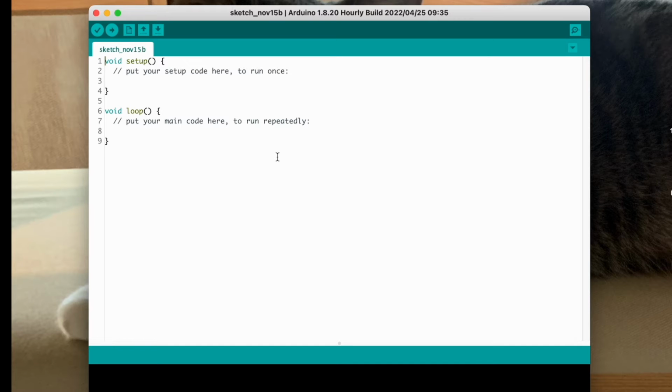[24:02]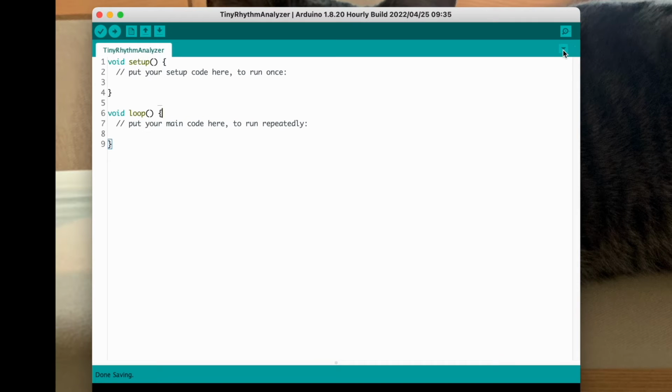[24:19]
So let's open our Arduino IDE. It will open this new sketch right here. The first thing we will do is to save it in our project directory. So I just did that, and I named this Arduino sketch Tiny Rhythm Analyzer. And so click on this, click new tab, and we will name this new file CircularBuffer.h.
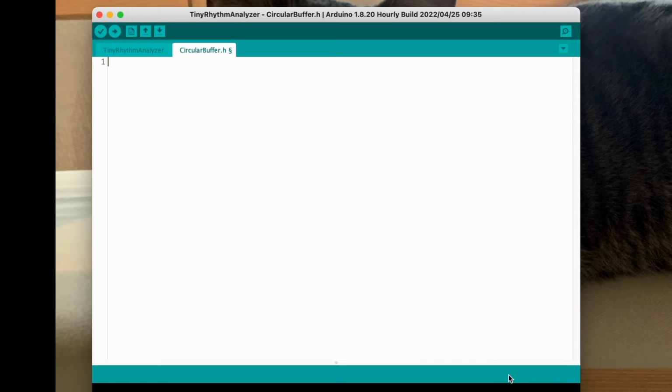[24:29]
We're going to create a class of the same name. So remember to use pragma once to prevent multiple inclusion of the header file. The traditional #ifndef and #define method also works too if you prefer that. This class will have 4 private member variables. Let's actually make this a template class.
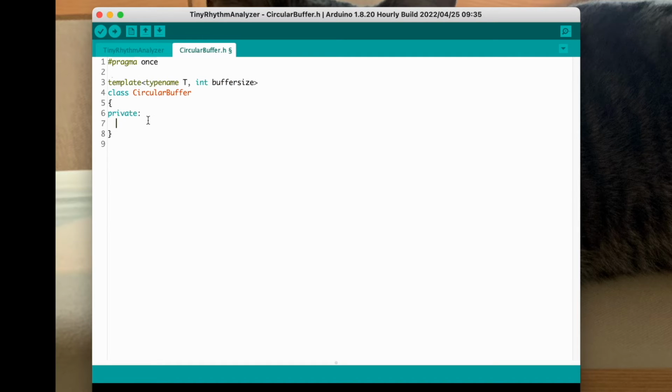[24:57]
And then the first member variable is going to be the buffer itself, with a size specified by the template. So here I am going to have two integer variables. The head is the index that points to the newest data, and the tail is the index that points to the oldest data. I also have a Boolean variable indicating if the buffer is full or not.
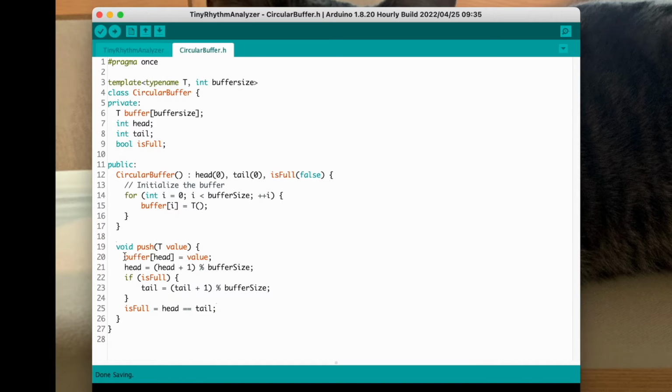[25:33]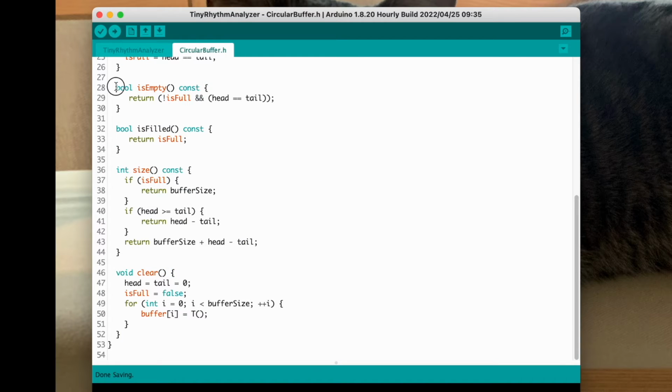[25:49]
Here I have the constructor that sets all the private member variables. So here the push method inserts a new value into the buffer, and if the buffer is full, then the oldest data will be overwritten, and here we also set the isFull flag accordingly. And then we will add these few methods. These should be self-explanatory.
And finally, we add the square bracket operator. This allows it to access the buffer using the square bracket notation. It's a convenient way to access the data in the buffer, and we have the const version as well. The method is designed such that the index 0 always corresponds to the oldest data, and the index size of the buffer minus 1 returns the newest data. And this is really consistent with the behavior of probably a double-ended queue of the C++ standard library.
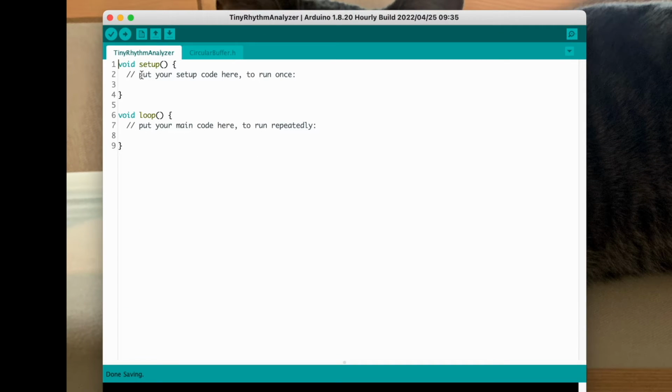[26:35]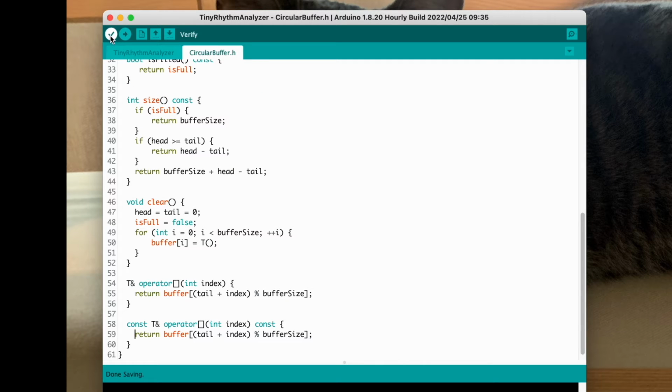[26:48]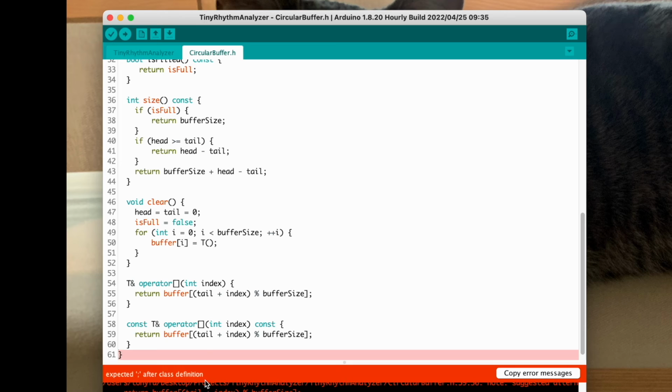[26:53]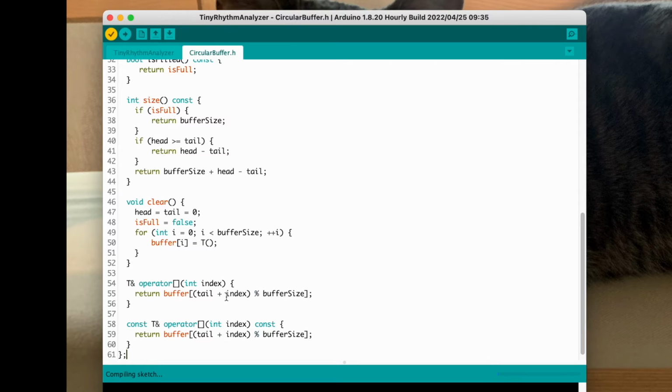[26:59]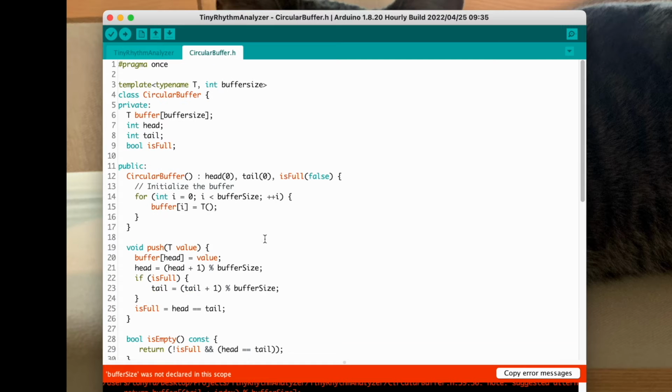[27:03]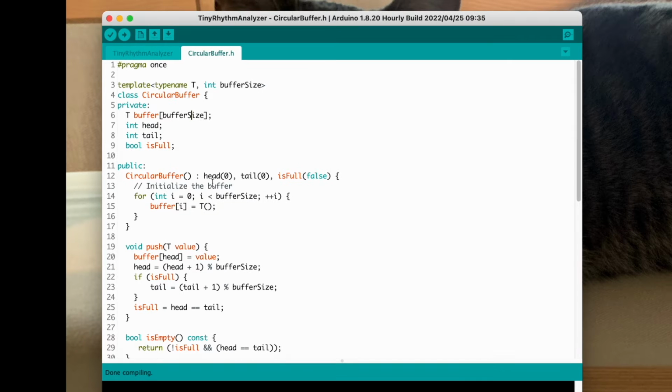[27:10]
And to perform some sort of sanity check of your code, let's go back to the sketch and then include the CircularBuffer here, save it, and then click this check mark to verify. Oh, my bad. I forgot to add the semicolon. Let's check this again. Oh, I see. Sorry, this should be a capital S, and so there's no compile time error, and in step 4 we're going to perform some unit tests on this class, so don't worry about it for now.
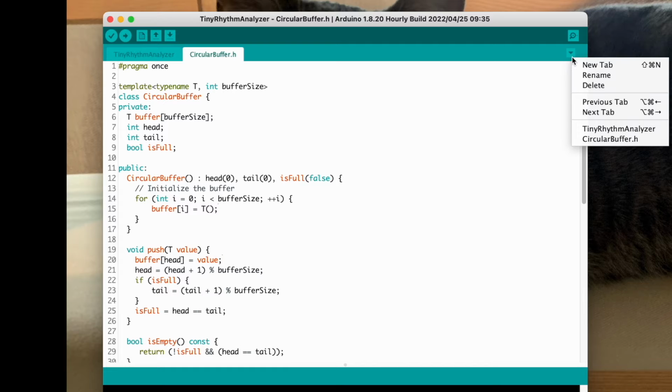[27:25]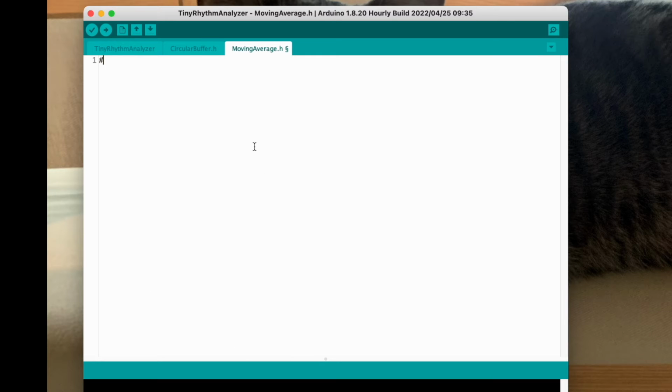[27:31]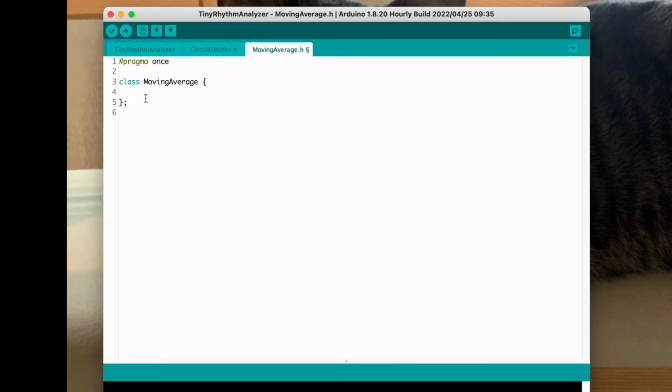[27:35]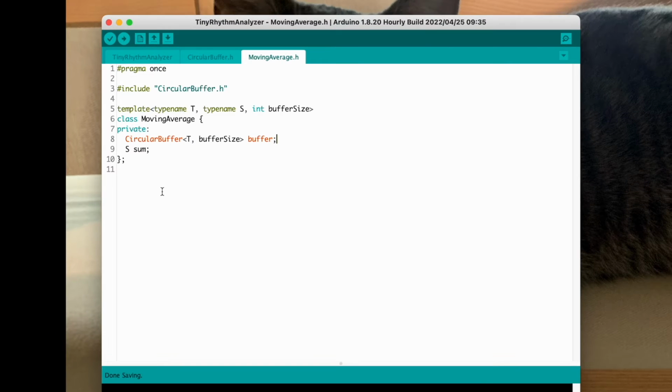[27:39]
So let's create a new file called MovingAverage. And we will create a class of the same name. And so this class is going to have two private variables. One is the CircularBuffer, and the other is the sum. You can see that the template parameter T is the type of the data that we want to store in the CircularBuffer. The S is the type of the sum variable. And so for example, if T is a regular integer, then you might want to use a long int for S to prevent overflow. And the buffer size allows us to specify the window of the moving average.
And so now think about how you want to implement this. So it seems a little bit inefficient if we just want to sum up the whole buffer whenever we get a new sample. If you think about this, maybe instead of adding everything up to the new data, we can simply subtract the oldest data from the current sum and then add the new data to that sum. And then we can just divide by the number of elements in the buffer to get the average. So this way we avoid doing a lot of unnecessary addition.
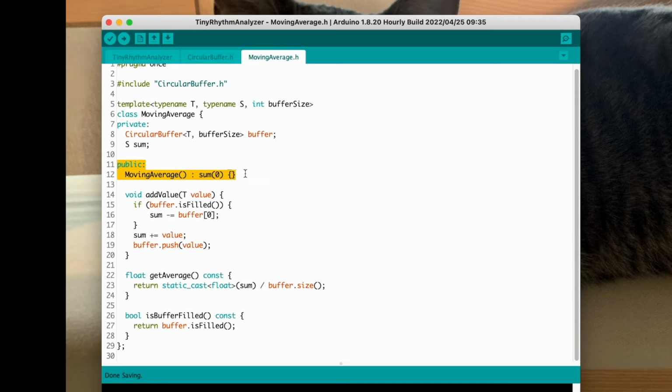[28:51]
So here the constructor will just initialize the sum to 0, and here the addValue method is exactly what I described. So whenever we have the new data, we simply add the current value to the sum, and if the buffer is full, we then subtract the oldest data from the sum. And also don't forget to push the value into the buffer. And to get the moving average, what we want to do is we just divide the sum by the buffer size. Remember to cast it to a float variable. And this is just a getter method.
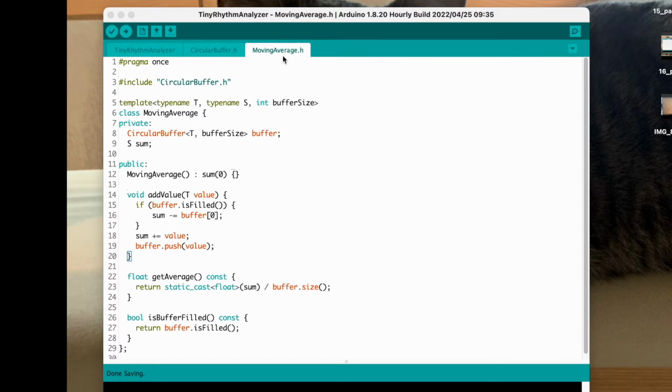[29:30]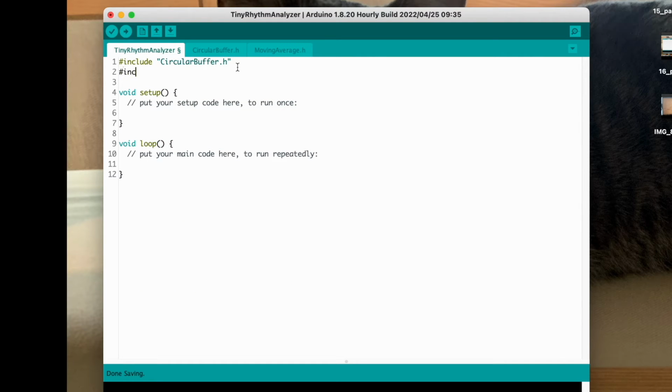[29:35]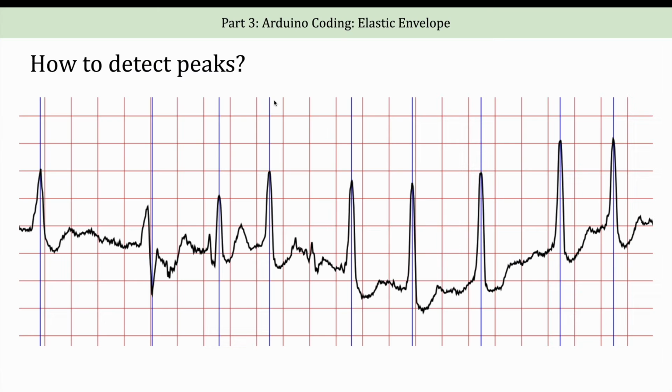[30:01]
And remember to make sure this moving average class compiles correctly. So let's go back to our main sketch and include this header file and click on verify. And the sketch compiles correctly. And so we know there's no compile time error, but as I was saying, we are going to do some unit tests in part 4, so we shouldn't worry about getting this 100% right for now. And so that was how to implement a MovingAverage class.
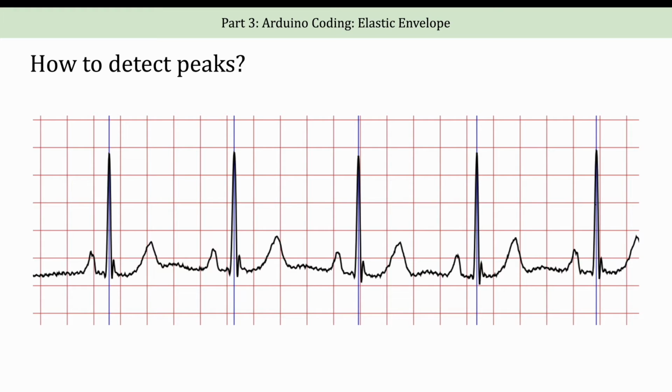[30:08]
And now let's get on to the ElasticEnvelope class. And so let's consider how to detect a peak. A common method involves setting a threshold like this. And if the signal crosses the threshold, we recognize that a peak has occurred, right? The key question is, what should this threshold be? So we can't really rely on a fixed threshold, right?
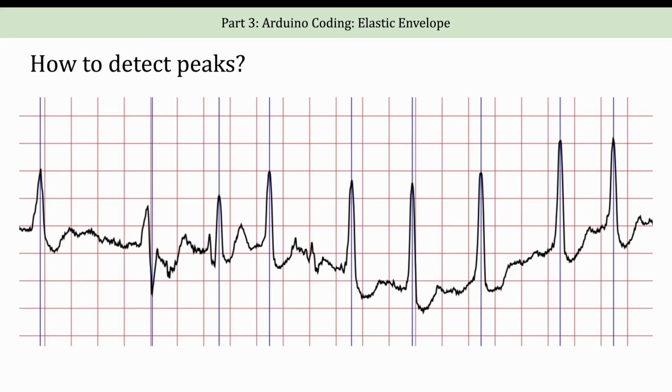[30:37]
Because the signal as a whole might drift over time. Let me show you an example. It's actually happened quite often, especially on wearable devices. So if we apply a fixed threshold on this signal here, then you see it will be too tall for some of the peaks on the lower baseline, and it might be too short for some of these peaks at a higher baseline, such that we might accidentally count these P waves here.
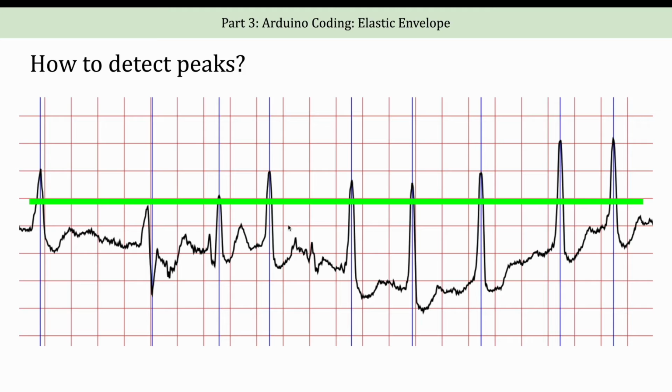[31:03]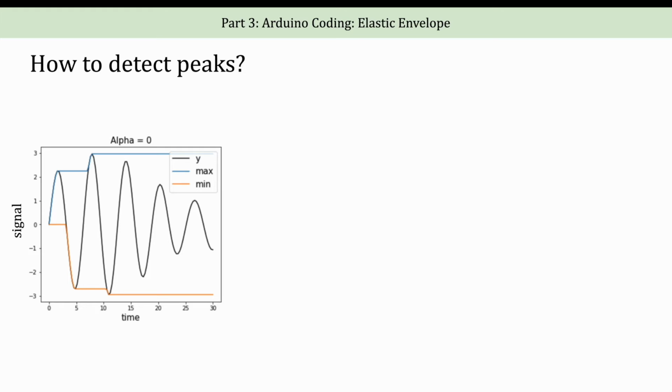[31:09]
A good threshold should be dynamic, that is, it should adapt to the signal. So one approach to adapt to the signal is to monitor the maximum and minimum of the signal. The threshold can be set at the midpoint between these maximum and minimum values. However, we shouldn't retain the all-time maximum and minimum, should we? If we did, the max and min will only expand to the extreme value.
So here is a plot where I track the running maximum and minimum up to a current point. As you can see, the max and min are expanding to the extreme values. So this isn't ideal, as the signal might vary over time, and in this case, the max and min just keep remaining here, and it's not adapting to the signal.
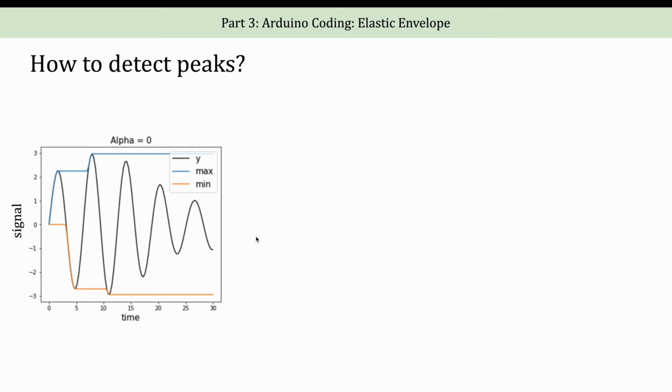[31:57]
So let me introduce to you the concept that I call an elastic envelope. The point here is pretty simple. We simply apply an exponential decay so that we pull the maximum and minimum towards the midpoint, adapting to the signal over time. See how this operates at a decay rate of 0.01, and this is operating at a decay rate of 0.05, and you can see the envelope adapts more rapidly. And so let's go ahead and implement this concept in our code.
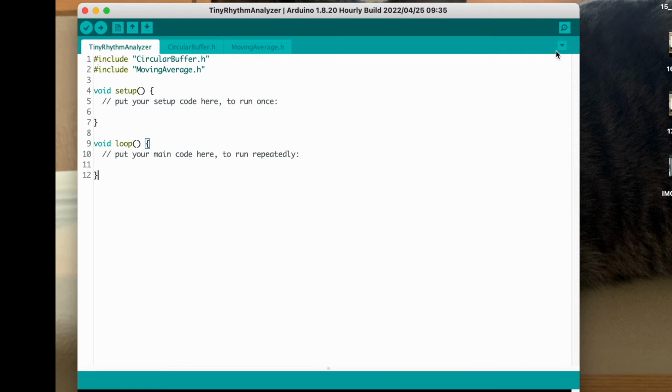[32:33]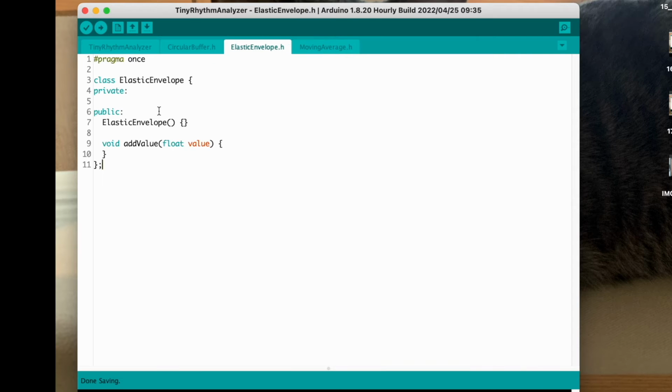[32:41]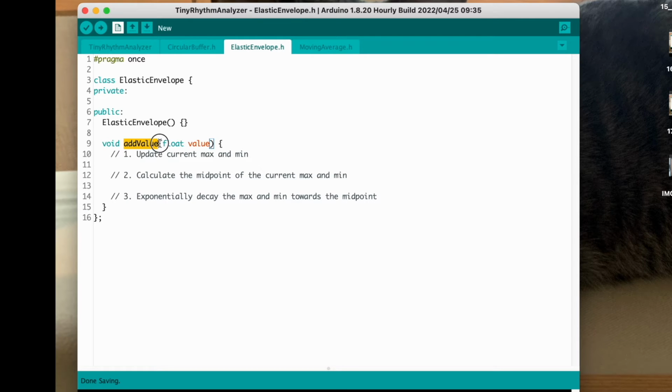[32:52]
So let's come back to our Arduino IDE, and this time we're gonna create a file named ElasticEnvelope. And we can start with the following skeleton code. We have the constructor and this method called addValue. And this addValue function will consist of 3 steps. We will update the maximum and minimum. We will also calculate the midpoint and then exponentially decay towards that midpoint. So let's go ahead and add 2 fields over here, and currently we'll initialize them to 0, but we might want to change that later.
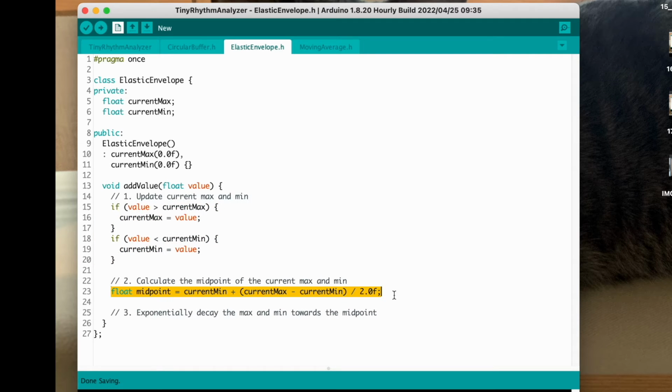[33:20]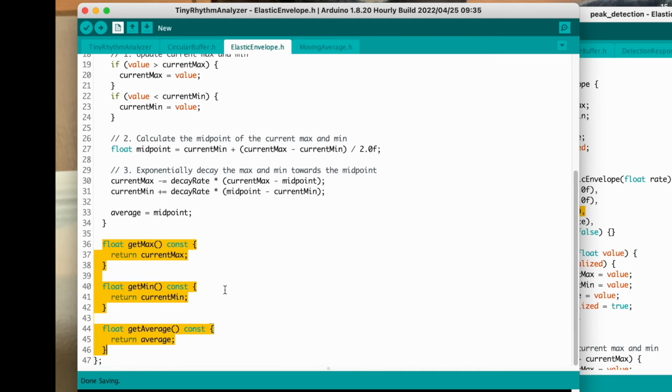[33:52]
And in step 1, we basically just update the current maximum and minimum depending on the value. And then we can calculate the midpoint. And here at step 3, we apply the exponential decay towards the midpoint. Here we added a new field called decay rate and initialize it to whatever rate the user specified. And notice that I also added explicit. It's good practice to make the constructor explicit if it only takes a single argument. This is to prevent implicit conversion. And down here I added some getter methods, and I also want the user to be able to get the average, and so here I added a new field called average, initialize it to 0, and then set it over here.
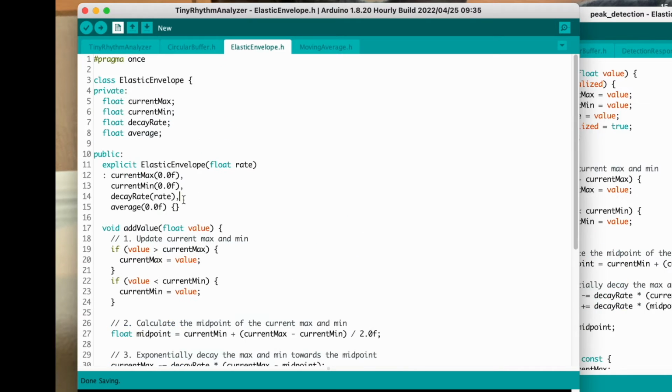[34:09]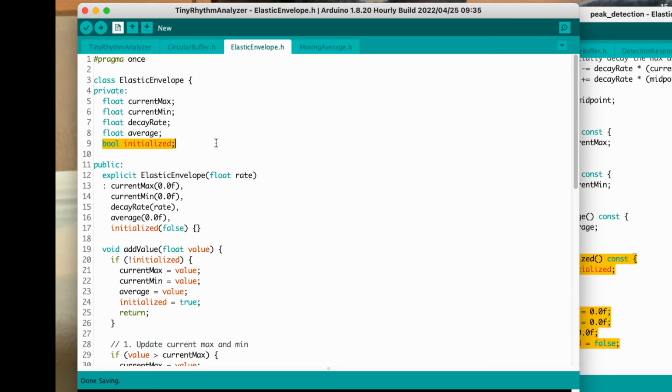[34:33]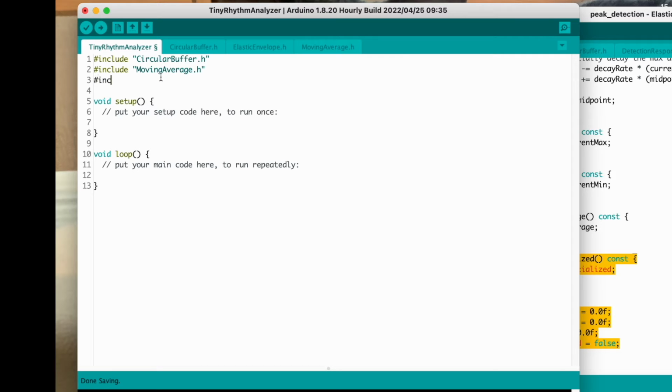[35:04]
And so notice that I'm currently initializing the current min and max to 0. This is not really ideal. For example, if the value we get is always positive, then this current min will not get updated properly. And so we might need a way to initialize it. An easy way to handle this is to have a Boolean flag, let's name it initialized. And then we initialize it to false. And whenever we're not initialized, we will initialize the current max and min to the newest value. And then we can provide the corresponding getter method and also provide a way for the user to reset this envelope.
And finally, for a sanity check, let's again include the header and click on verify. And the code did compile. So we should be good on this for now.
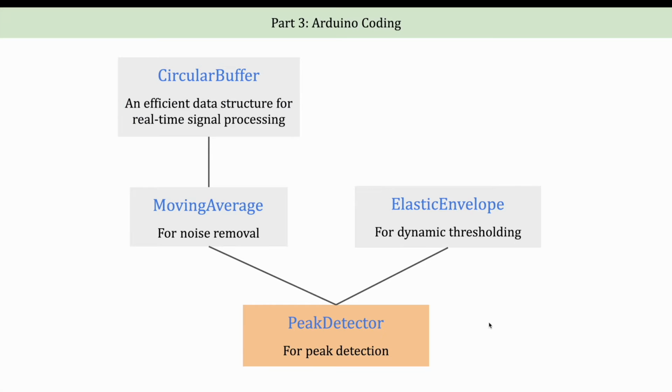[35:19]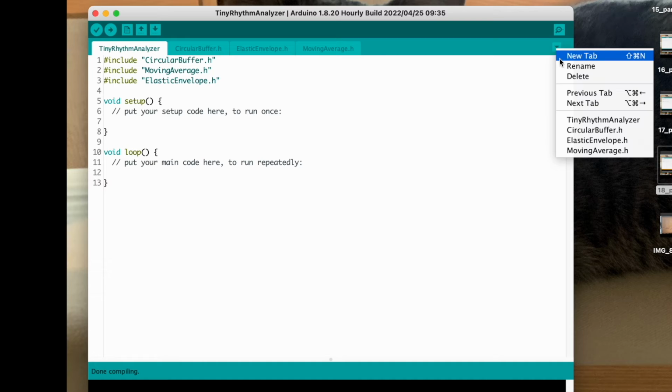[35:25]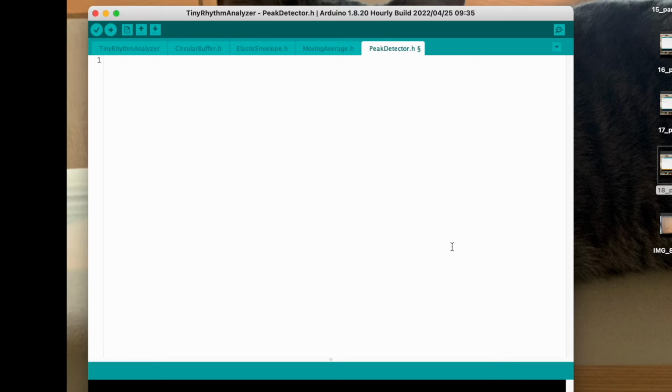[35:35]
Yeah, and finally, it's time for us to implement the PeakDetector. So let's again go back to our Arduino IDE and create a PeakDetector sketch. And create a new PeakDetector header file, and we can start with this skeleton code over here.
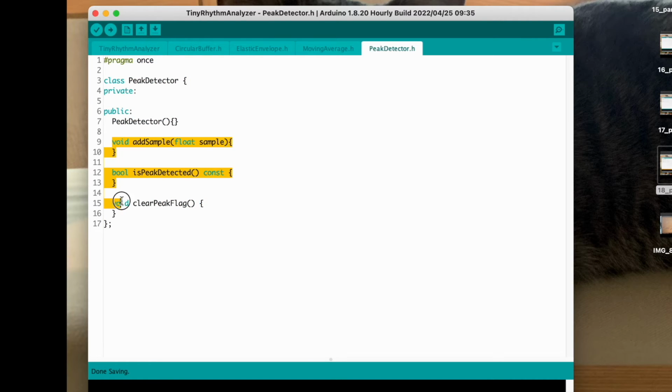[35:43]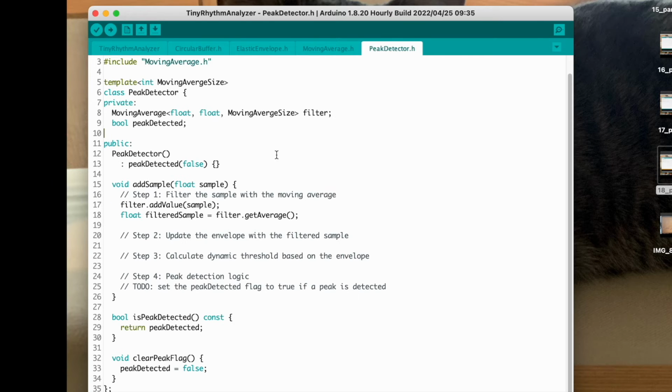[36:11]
And so we want this PeakDetector to expose three methods here. The first method, called addSample, takes a new sample and updates the PeakDetector. If a peak is detected, it will set some kind of flag to true. Then the user can call this PeakDetected method to check if the peak is detected. If so, then the user can call this clearPeak method to clear that flag. And so here I added some new code in the addSample method.
We want to first filter the sample with the MovingAverage, and so that requires us to also include the MovingAverage header and also add a MovingAverage filter in our private member. And the second thing we need to do is to have some kind of private field that is a Boolean. We can initialize it to false, and if we detect the peak, then we can set the peak detector flag to true. And here at the bottom is where we can implement the two flag related methods.
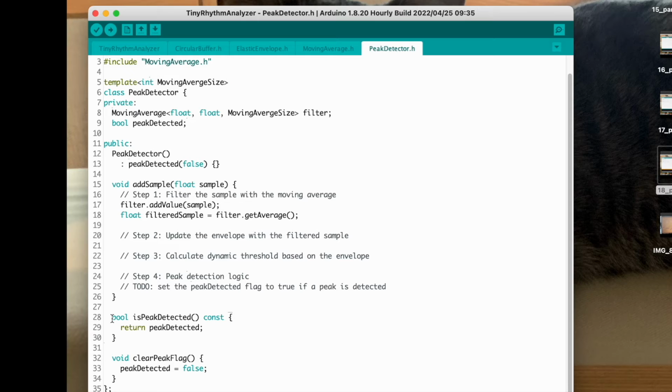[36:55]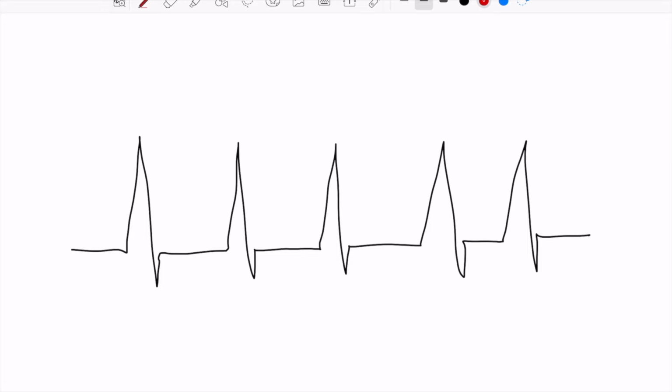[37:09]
I know that we're only halfway done with our ElasticEnvelope class, but before we finish the rest of the addSample method, let's go to the drawing board and address some issues regarding the threshold. So let's consider this signal over here. Let's set our threshold to be, say, this line here. And the rule is if the signal crosses the threshold twice, for example, here once and here twice, then we know a peak has occurred.
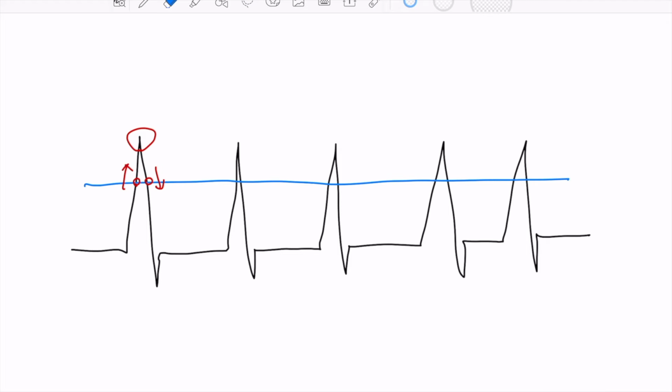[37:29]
However, let's say we have this extra spike at this peak over here, right? It gets a little bit noisy, and we might erroneously count this peak as two peaks, even though there is only one. And so to mitigate this kind of noise, we can use two strategies.
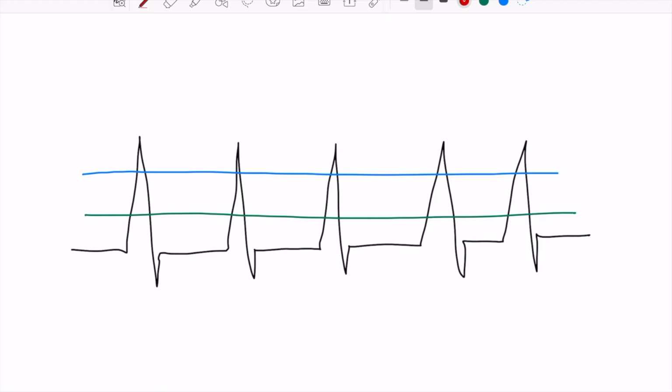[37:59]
So the first strategy is implementing hysteresis. This might sound complex, but it's just a fancy way to say we need two thresholds, an upper threshold and a lower threshold. So here we count the peak when the signal crosses the upper threshold, and we only reset this detection when the signal crosses the lower threshold. And so by having two thresholds, we effectively prevent some of the false detection in a noisy signal.
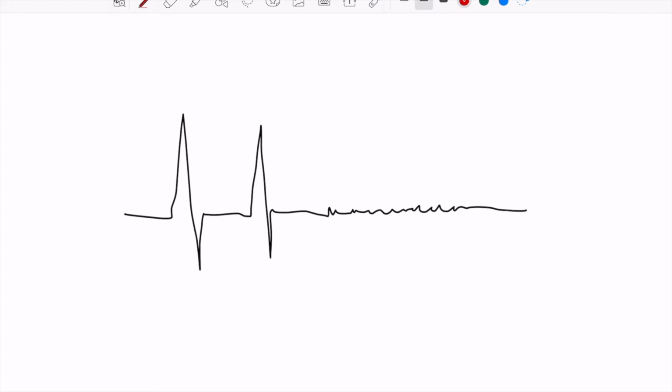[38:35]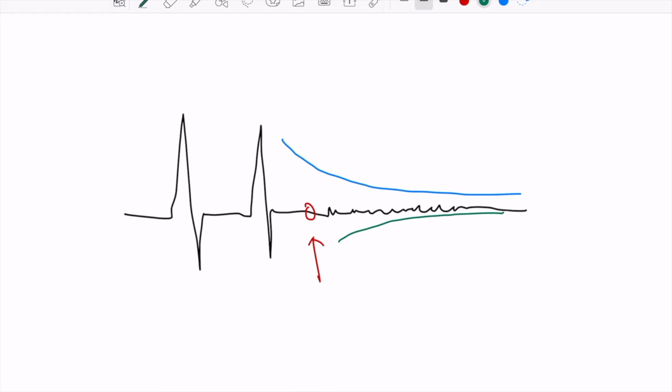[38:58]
Our second strategy involves defining a lower limit for the difference between the two thresholds. So let's say the user removes the electrode at this time point. Now all we have left is small amplitude noise. Since we are using the elastic envelope to estimate the threshold, eventually these two thresholds will adapt to the noise. This means that the upper and lower threshold will converge and the difference between them will be small. So if we set a minimal threshold difference, we can disregard the signal if this difference here has become too small. And so let's go back to the Arduino IDE and implement these two strategies in our code.
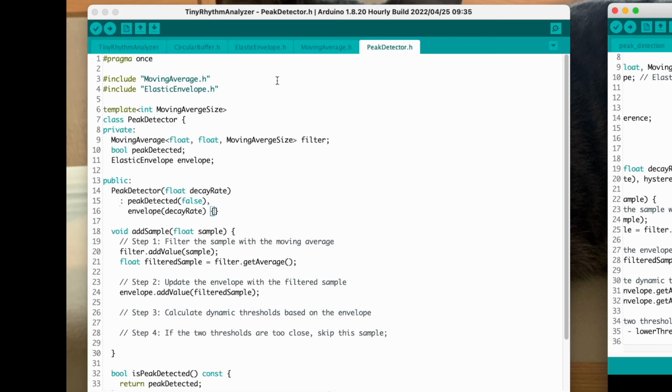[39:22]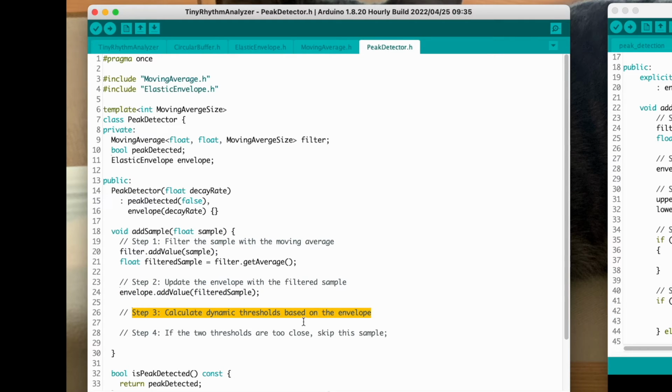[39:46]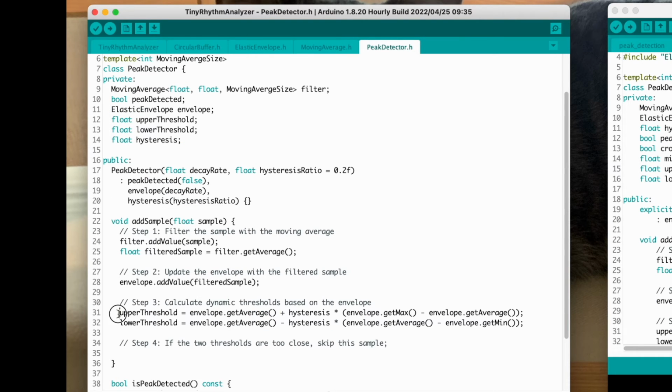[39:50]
So let's come back to our code here. As you can see, I added the elastic envelope header, and I also added the envelope as a private member to this class and initialized it right here, allowing the user to specify the decay rate. And here I call the add value of the envelope to update the envelope. And then the next thing we will do is to calculate the two dynamic thresholds of the envelope. So here are the two formulas that I use to calculate the upper and lower thresholds. I declared over here this parameter called hysteresis. We can allow the user to specify it in the constructor and initialize it over here.
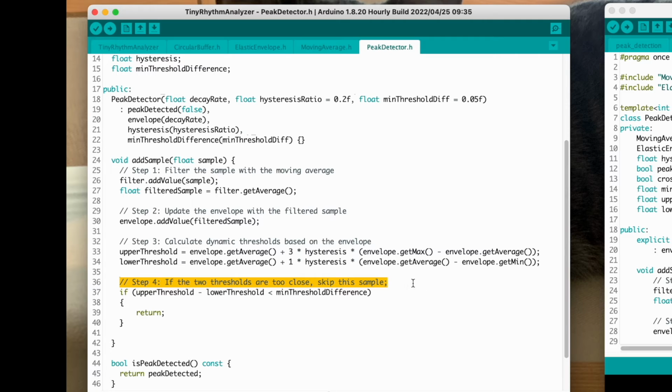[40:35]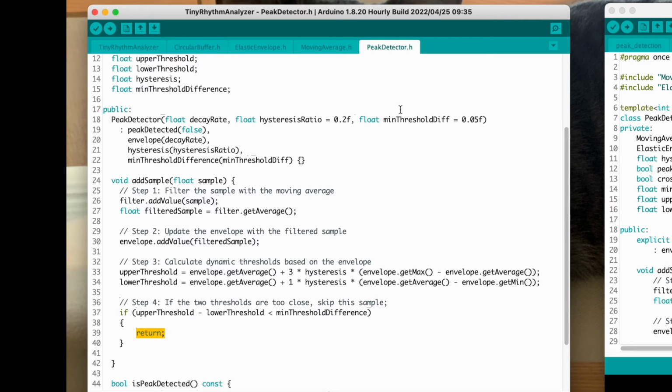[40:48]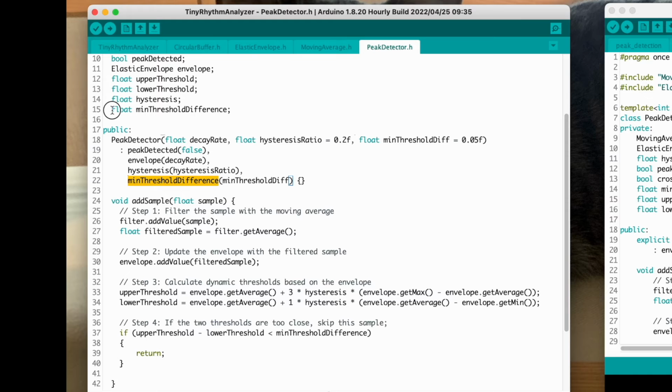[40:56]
So when I actually deployed this code, I found out that this threshold doesn't actually work quite well. It seems to work a little bit better if we raise both thresholds above the average. And so this is what I will do: 3 times here and plus 1 times here. Basically make those two thresholds above the average. And here, the fourth step is that we have to check if the two thresholds are too close to each other. If it's below this minimum threshold, then we will skip the sample here. And we can allow the user to pass in the minimum threshold diff here and then initialize it over here. Remember to declare it in the private members as well.
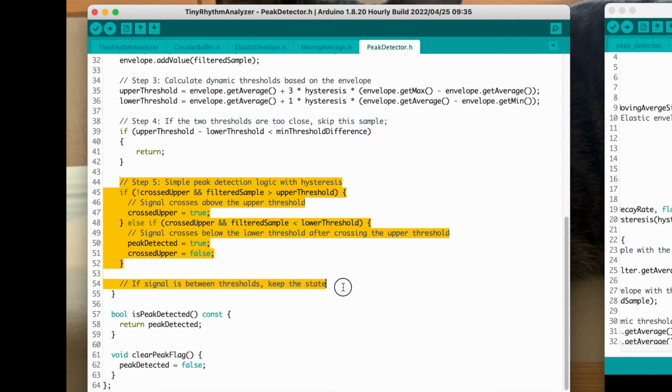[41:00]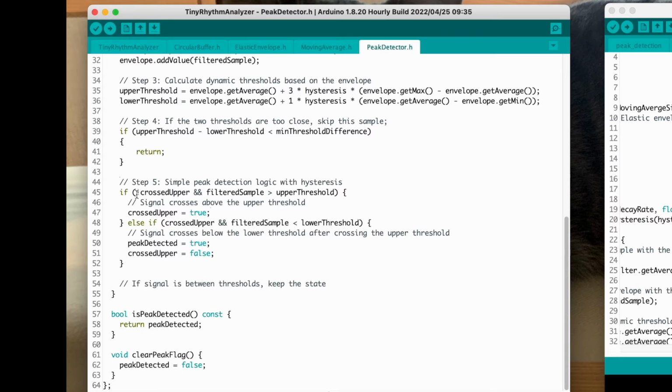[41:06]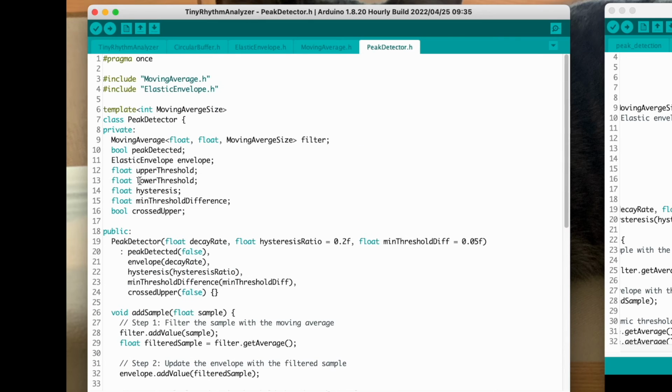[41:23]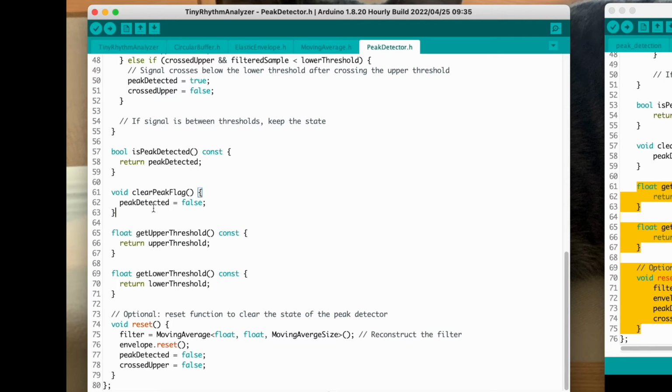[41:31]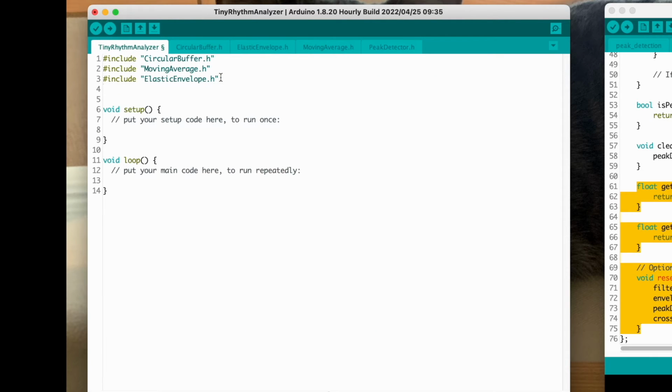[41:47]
And finally, this is our peak detection logic. So if the signal crosses above the upper threshold, we set the crossedUpper to true. And if it crosses below the lower threshold, then we have detected the peak. And then we will set crossedUpper to false. And remember, this crossedUpper here should be added as a member variable here too, and then we should initialize it to false. And here at the bottom, I added some getter methods that will come in handy later, and also an optional reset method to clear the state of the peak detector. So once all done, let's save this and include that in our main sketch. And click on verify.
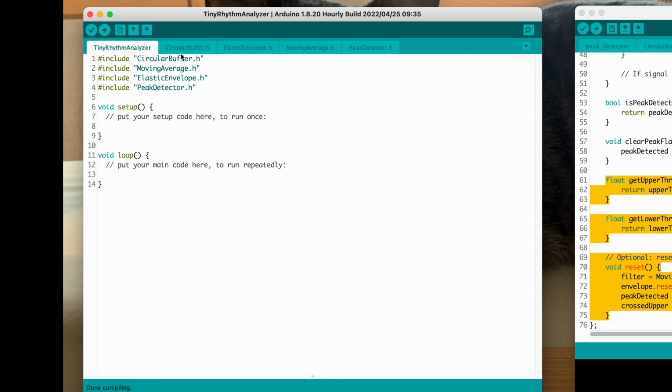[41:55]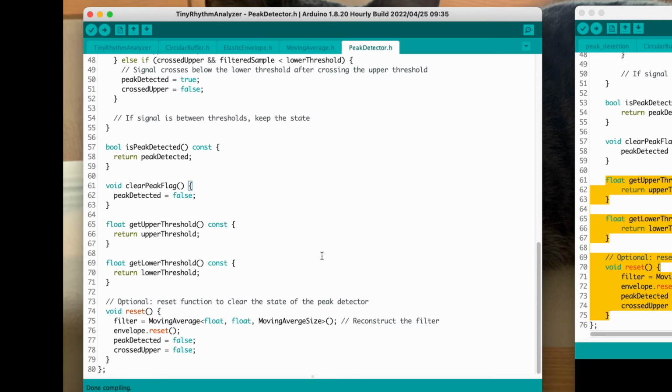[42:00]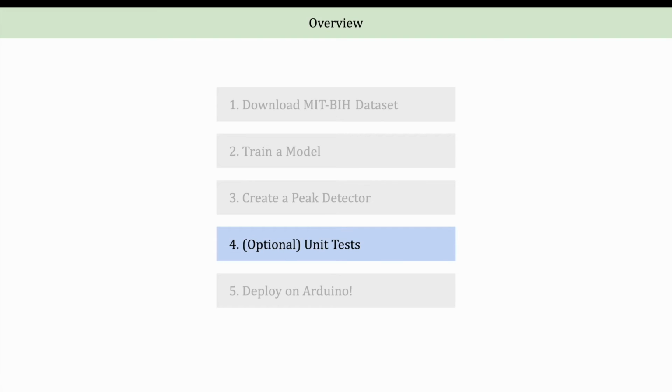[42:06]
And it compiles. So we finished the 4 classes here, and we should move on to part 4, where we can unit test these classes. So we have now created 4 classes for peak detection. Let's test each of them to make sure that they're working as expected.
This step is optional, but I think it's a good practice to test your code on a local machine before deploying on Arduino. And personally, I think it's more natural to write code alongside the test. So when I was actually developing this project, I wrote the peak detector code in parallel with the unit test. Here I'm breaking them into 2 separate steps just for clarity, but I think you should keep in mind what unit test you're going to implement as you write your code.
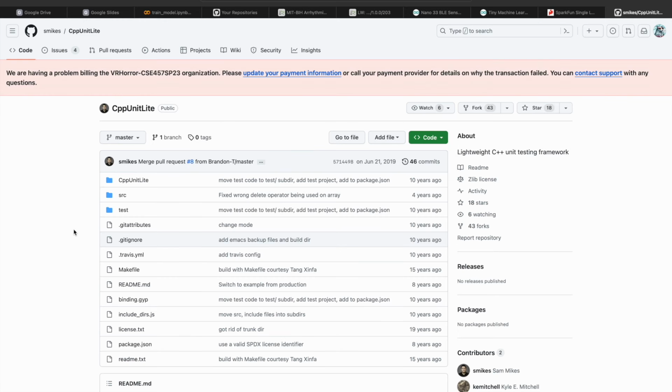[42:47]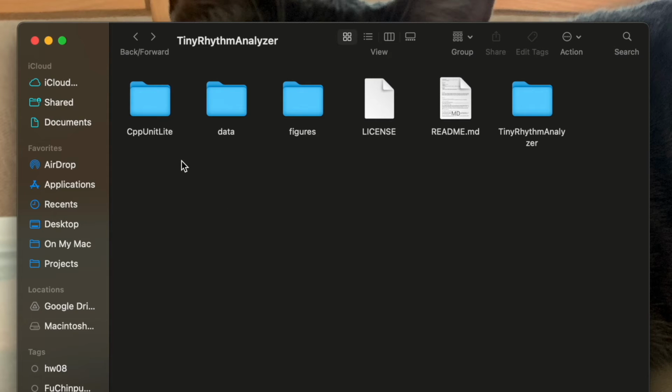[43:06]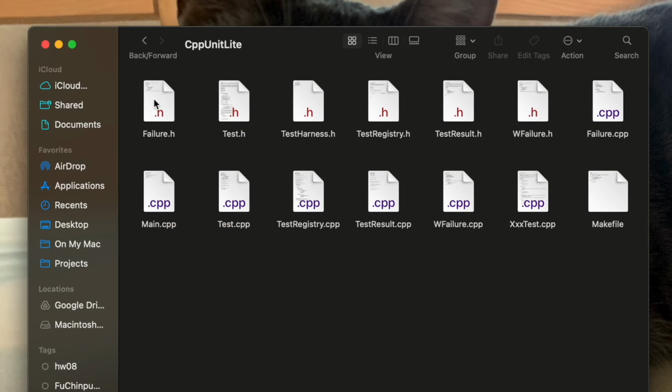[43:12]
So when it comes to testing C++ code, I prefer using CppUnitLite. It's a really lightweight library that can be easily integrated into your project folder. And trust me, it won't take more than a megabyte. So you can either clone this repository, or I will also upload this folder, CppUnitLite, to the project repository. And you can take a look at these files.
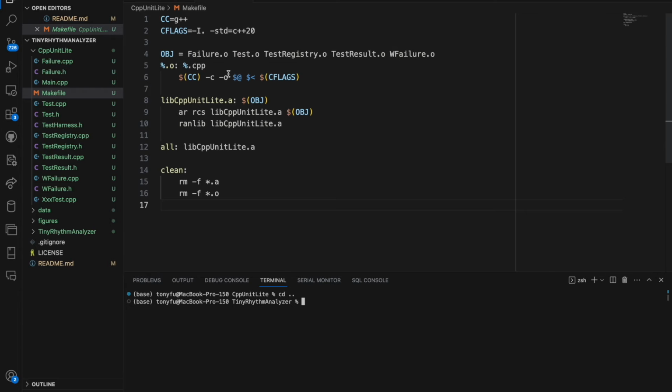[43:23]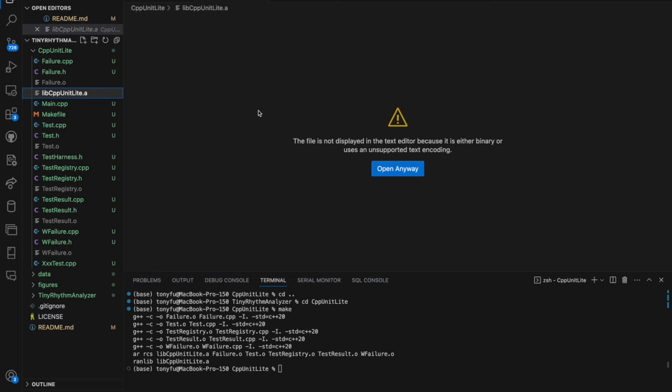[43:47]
I prefer working with these files in Visual Studio Code, so let's open it right now. Right here I am in Visual Studio Code, and I just opened a terminal. I am in the project directory. I just have to cd into CppUnitLite and do make. This will create a static library here, as you can see, called libcppunitLite.a that we can later use in our test. I will demonstrate how to write a few tests, and then you can write the rest of the tests yourself. I will put all the code on the repository.
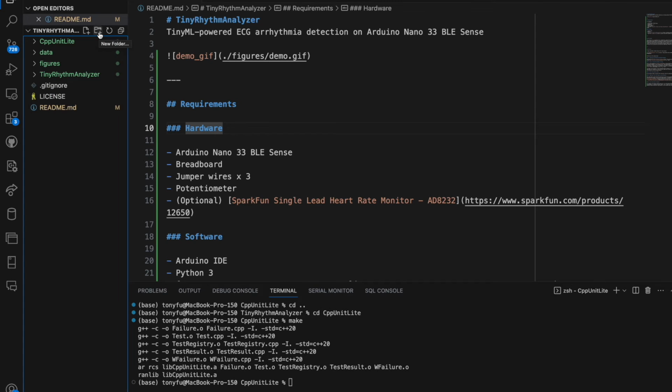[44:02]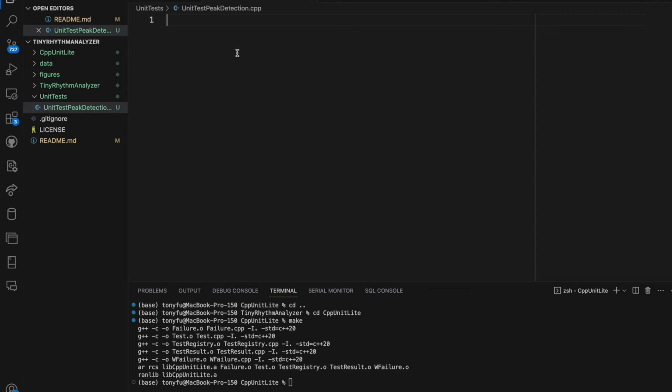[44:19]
And so in the project folder, create another directory, let's call it unit tests. And in here, add a file named unit test peak detection. This file won't contain our tests. Instead, I want you to paste the following content into this file. This is the main function that will execute all the tests. We will write the tests in separate files.
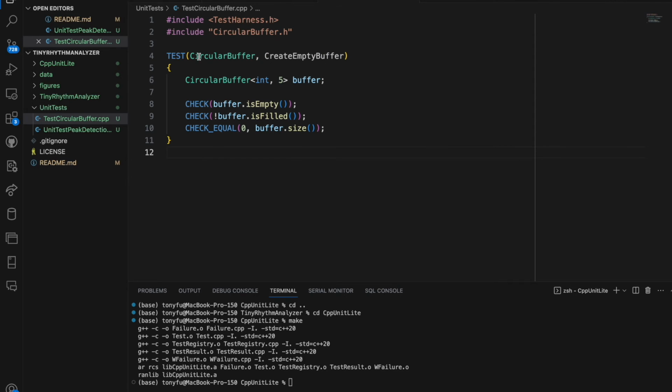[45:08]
So right here, I am testing the CircularBuffer class. I'm going to call this create empty buffer, and I will construct a CircularBuffer for integers, and then at the start it should be empty and it should not be filled. So use the check macros to check a boolean, and use the check equals macro to check if two things are equal or not. Before we run a test, we have to build it.
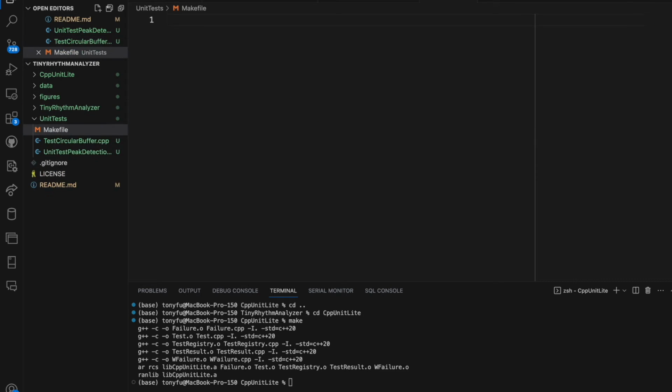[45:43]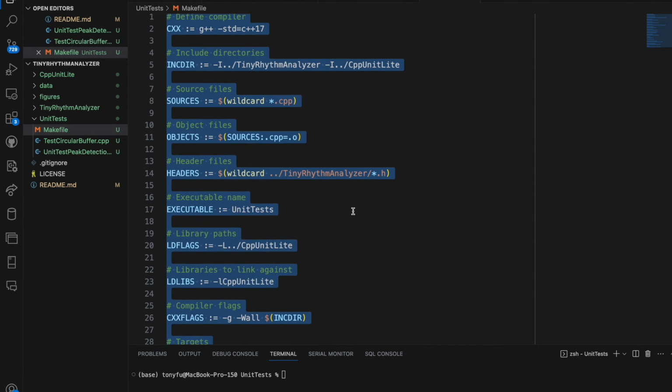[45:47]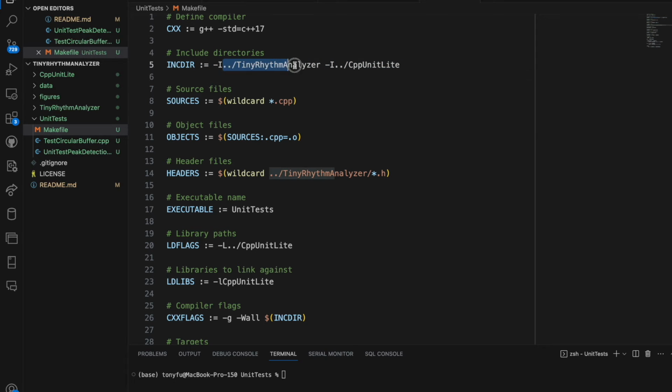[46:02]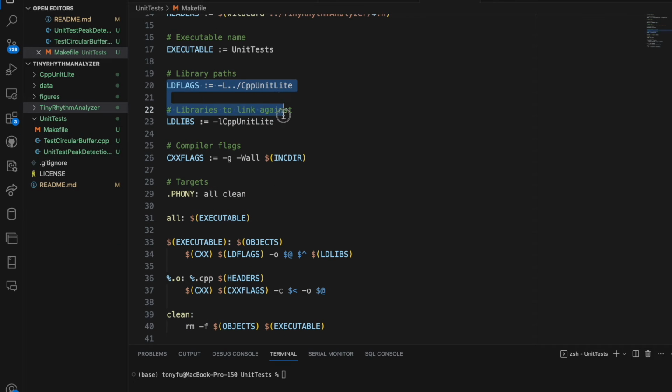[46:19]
And so let's create a makefile. Here I already put the content of this makefile. You can also find this file in the repository. The important thing to note is the include directory here. This is where the makefile will find all the header files used in the test. So remember to reference the Tiny Rhythm Analyzer folder and the CppUnitLite folder. And here we're doing the same thing, and we're actually using wildcard rules to list all the header files that are located in the Tiny Rhythm Analyzer. And down here at the library path, this is how this makefile is able to locate this .a static library.
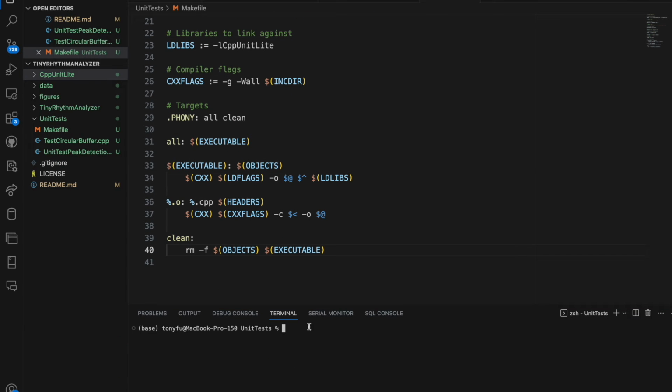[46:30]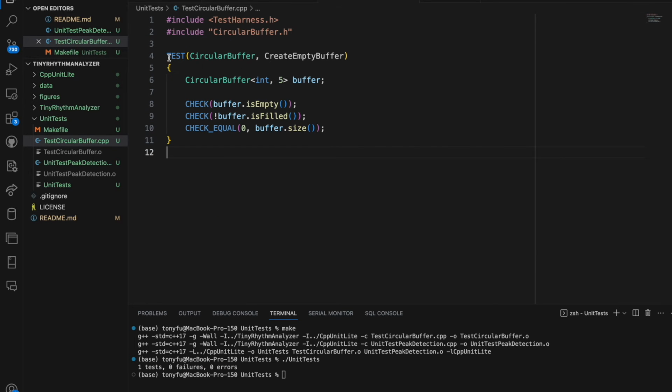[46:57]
And so down here, I already cd'd into this unit test directory, and I can just run make, and it should compile this unit test executable, and then to run it, you run ./unit test, and as you can see, it ran one test with success. And then back to the file, you should implement more tests for the CircularBuffer and for the other classes. And that's it. That's how we perform unit tests on C++ functions and classes.
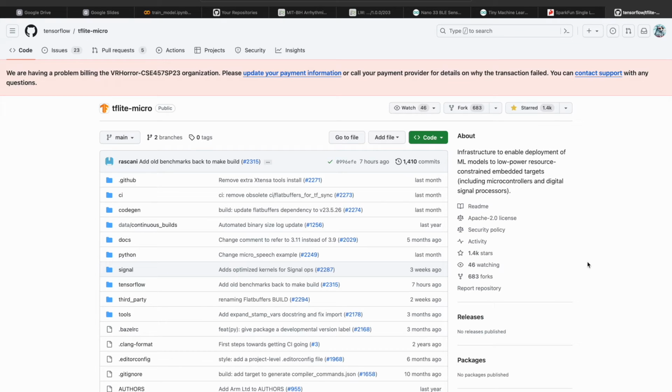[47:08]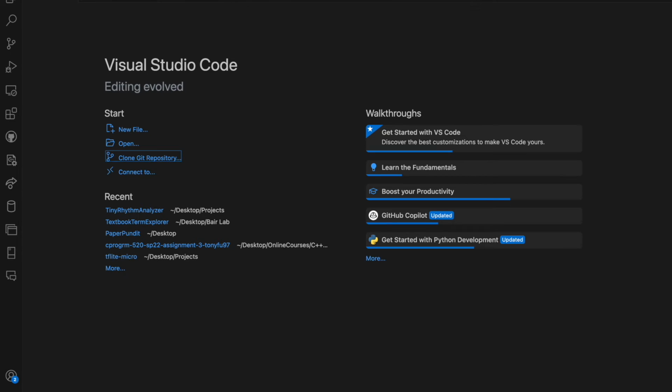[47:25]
So we have just tested our PeakDetector and algorithm classes. And so let's now move on to testing our model inference. First, we will head over to this TFLite Micro repository, and we should clone it. Paste it over here.
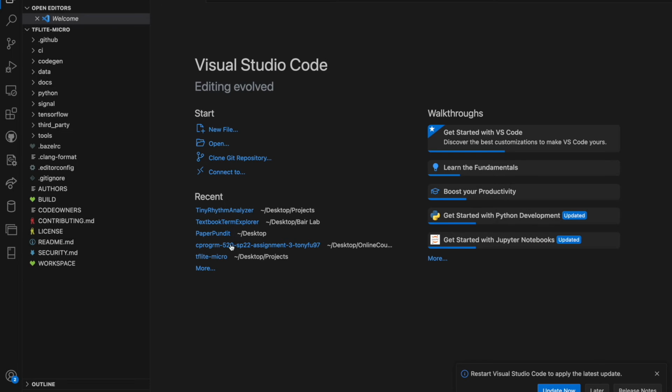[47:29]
And then we just clone it to somewhere on our desktop and then open it with Visual Studio Code. Ideally, we can build another static library similar to what we did with CppUnitLite and then use it in our project. However, I encountered some issue with my attempt, and specifically, the program had trouble allocating tensor.
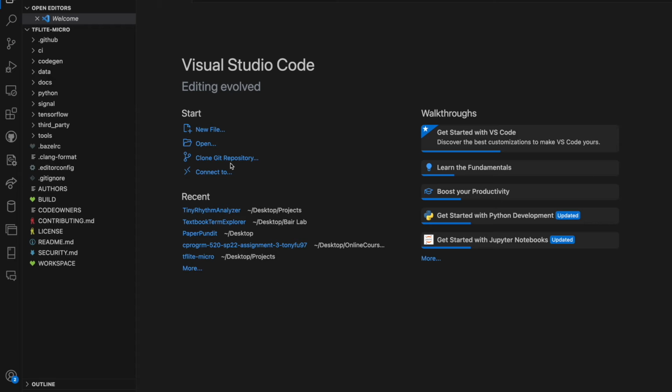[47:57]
What I mean is, the input and output tensor were invalid, all the attributes appear as null pointers. And so therefore I won't be doing that approach here. So if you know the correct way of how to incorporate TFLite Micro on a local machine, I'd appreciate your input in the comment section below.
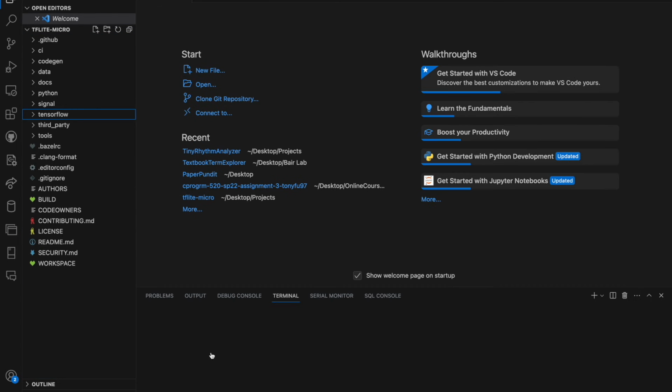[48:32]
But for this demonstration, we're just gonna do something very simple. We're gonna overwrite the existing Hello World example in this repository and run our model there. But first, let me show you how to run the Hello World example. So let's open a terminal.
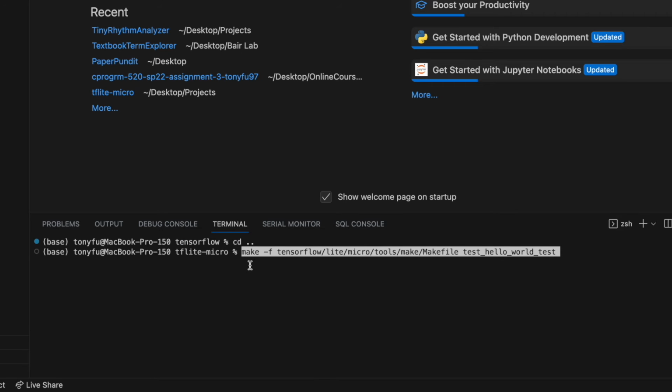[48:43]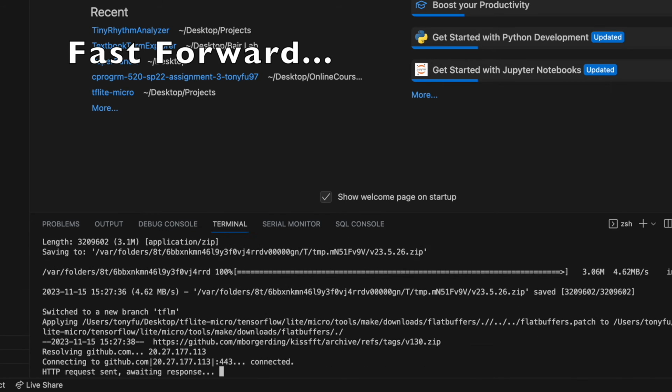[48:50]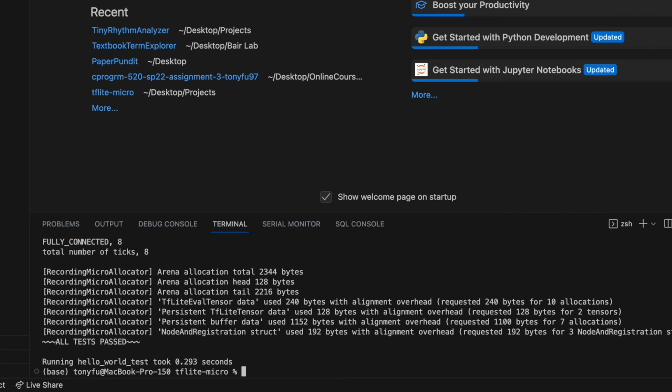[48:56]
Make sure you're at the TFLite Micro directory, and I want you to run the following command over here. And as you can see, that took a while because it needs to download some extra files and also build and run a test. This is because this is the first time we run this command. It won't always take that long. And it indicates that all tests have passed.
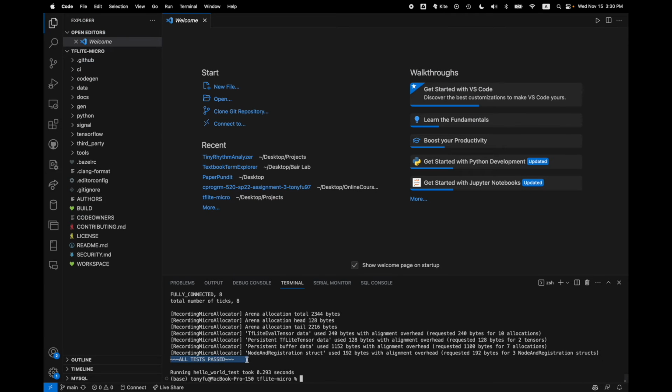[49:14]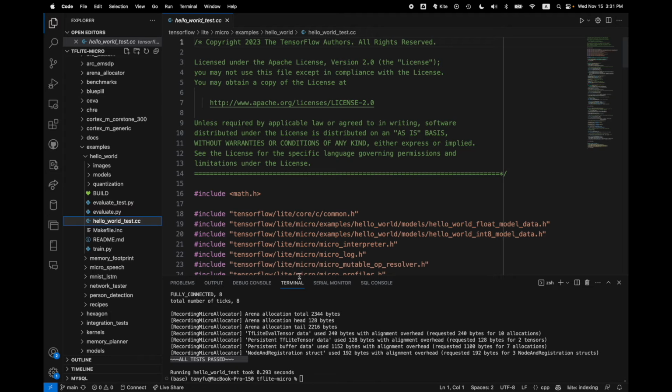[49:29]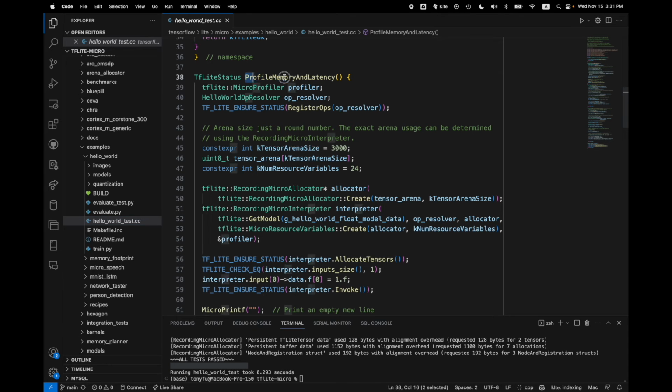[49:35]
And so let's go to this Hello World example here. Go to tensorflow, lite, micro, examples, and hello_world. And this is where that test was written. What this file does is that it defines 3 tests, each as a function. And at the bottom here, there's a main function that runs these 3 tests. If all 3 tests pass, then it prints out all tests passed, as we can see over here in the terminal. And so what we want to do is we want to comment all these tests out for now.
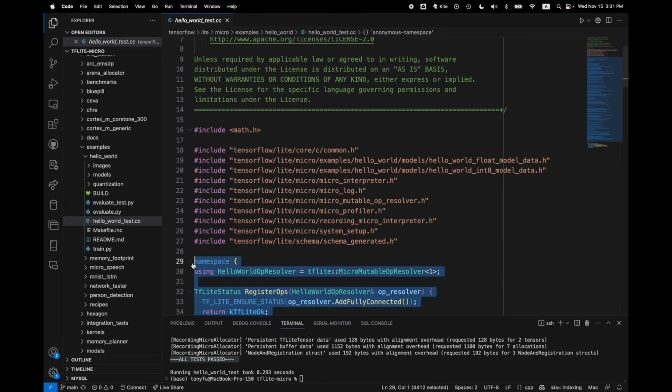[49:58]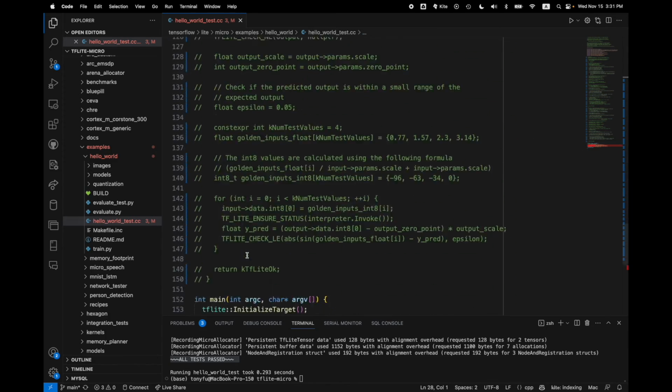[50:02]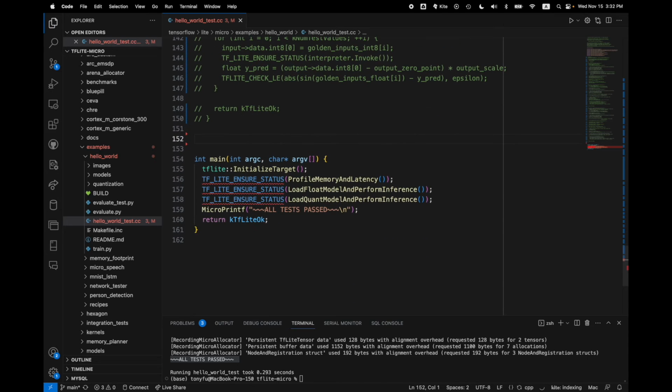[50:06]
Comment them out. Also comment these. And then here at the bottom, we're going to add our own test. And I will include this file in the project repository as well.
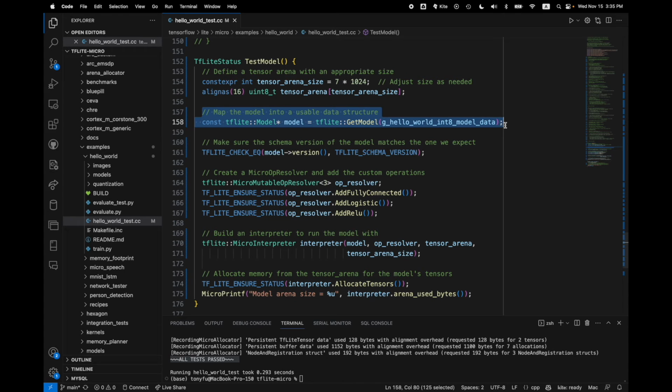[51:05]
And then we load the model. This is a very lightweight operation to map our model data into a usable data structure. It's important to ensure that the model's version matches the TensorFlow Lite Micro schema version expected by our code. So, by the way, the model name has to match the one I've used over here.
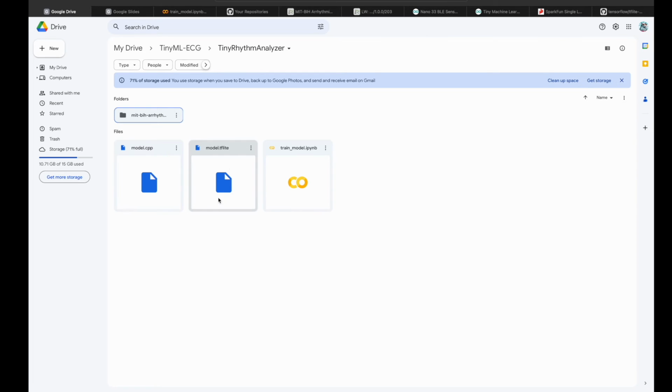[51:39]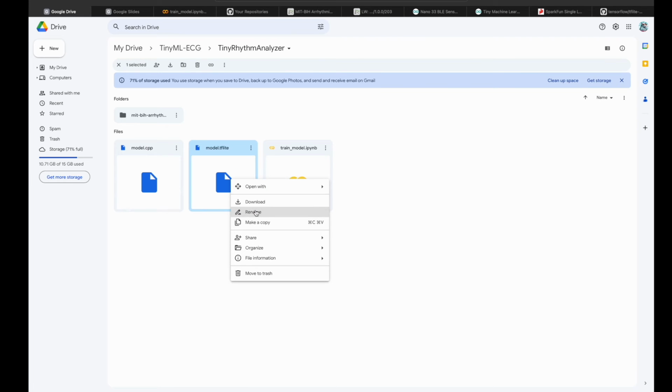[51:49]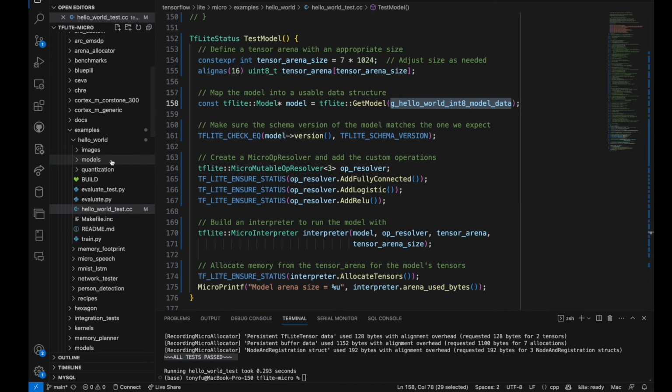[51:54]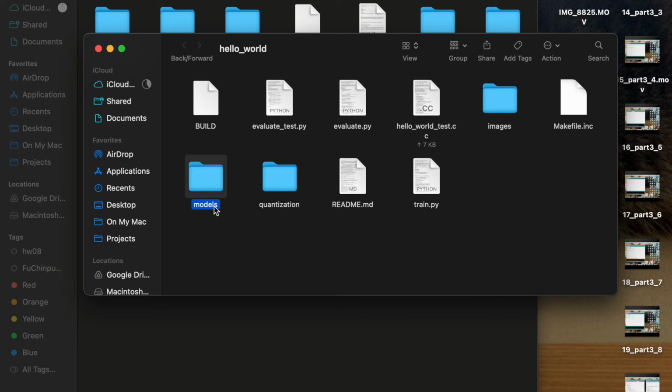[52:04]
So if you haven't downloaded the model, let's go back to the Google Drive. Remember that in the Google Drive, you export the model as a TFLite and C++ format. Let's download this TFLite format for now. And then back to Visual Studio Code, I want you to right click on this model folder under the Hello World directory. Click on Reveal in Finder. This will open a folder right here.
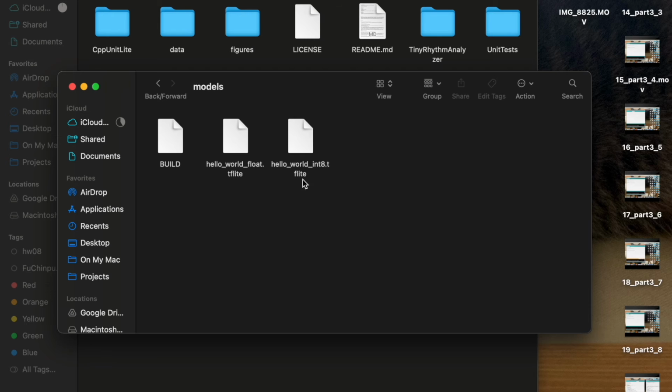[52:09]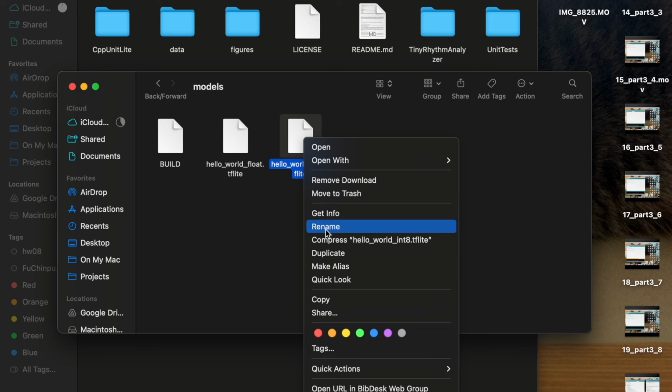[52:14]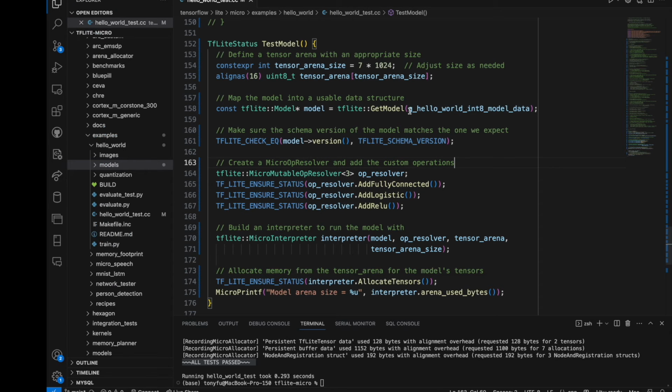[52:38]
Double click it. I want you to rename the original TFLite to something else. Let's say original TFLite. And then I want you to drop the model TFLite that we just trained and rename it to be the same as the original file. And just like that, we have replaced the Hello World model with our own model.
So here, as a third step, we are adding the necessary operations for our model. Because we know that our model is pretty simple, we only have a dense layer, also known as fully connected layer, and each of them has ReLU activation, and the last layer has a sigmoid activation, also known as logistic activation. So we only have to add 3 operators for our model. 3 operators, so we have to pass in 3 in the template over here.
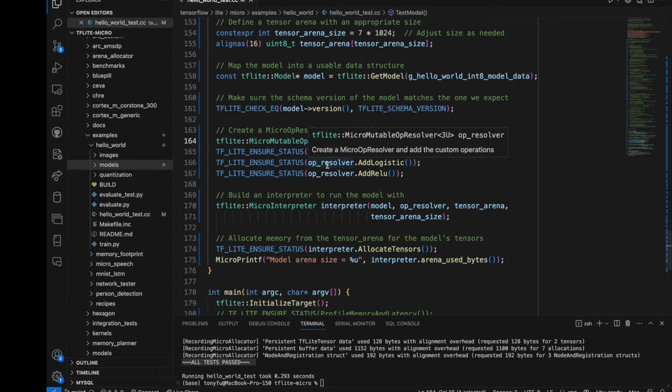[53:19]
Personally, I think this is a pretty smart design choice by the engineer who made this API. I think it allows us to include only the operations we need. For example, we don't need convolution operators, so they won't be included in our final executable. Thereby we reduce a lot of memory footprint of our application. Remember that these microcontrollers have very limited memory, and so it's a waste of resources to include operations that we don't need. And then once we have all 4 elements over here, we can use them to construct an interpreter. The interpreter is responsible for running our model.
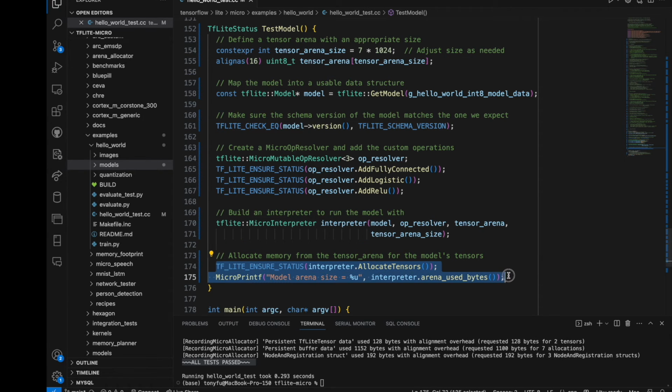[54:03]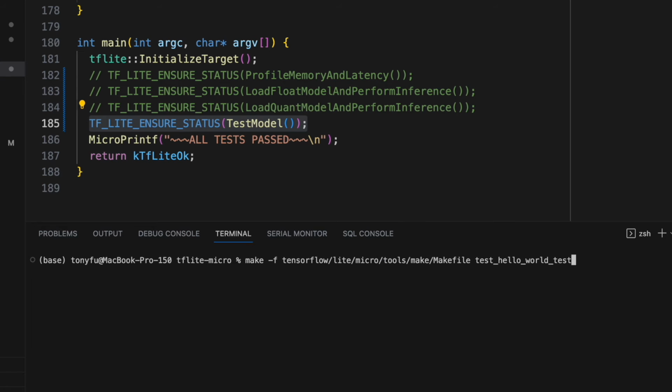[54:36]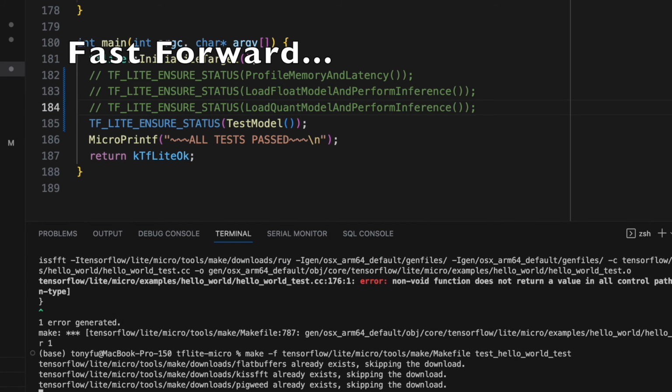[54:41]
And then also a very important step here is to allocate memory for the tensor. And so we call the interpreter allocate tensors to allocate memory for the model's tensors within the defined tensor arena. And then we print the size of the tensor arena. And then here at the bottom, remember to return this flag over here indicating that the test has passed. And here we need to call the test model function, and that's run. We can run the same command that we ran before.
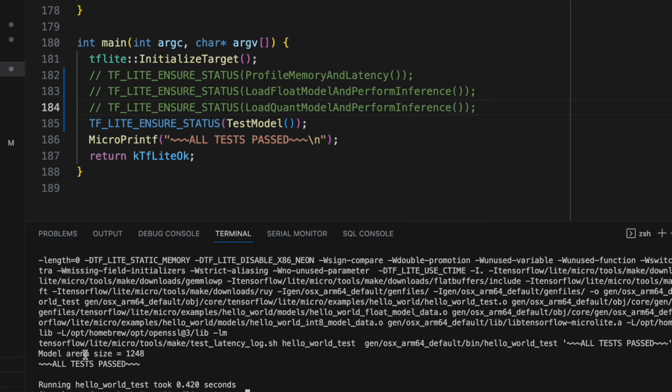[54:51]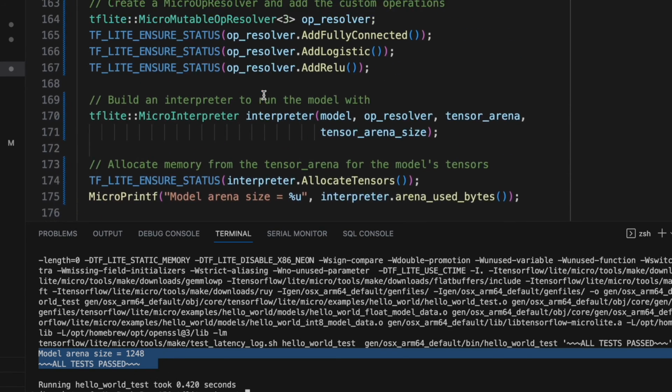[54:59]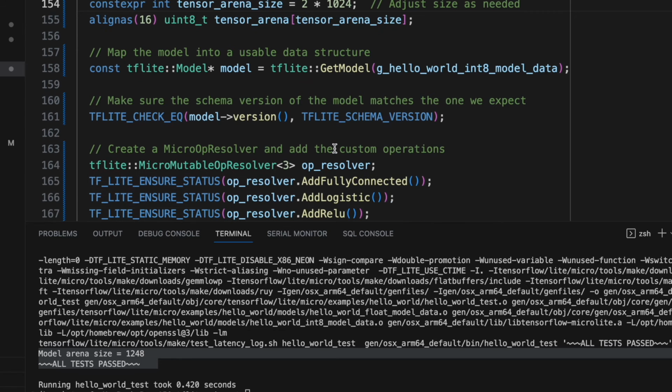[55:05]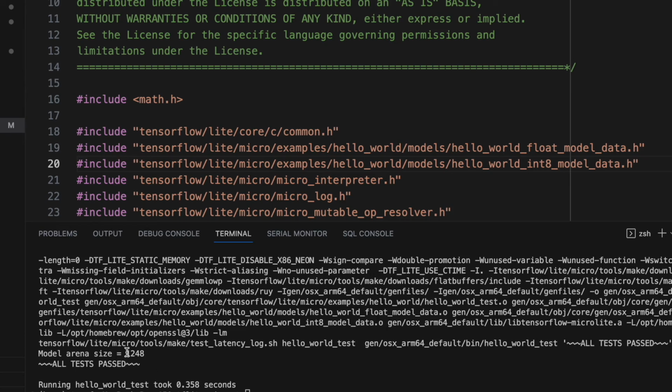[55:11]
And so it finally finished. And as you can see, the model arena size only takes up about 1 kilobyte. And so we can actually go back here and decrease our tensor arena size to 2. And let's run again, and it should still work. And as you can see, the test still passed.
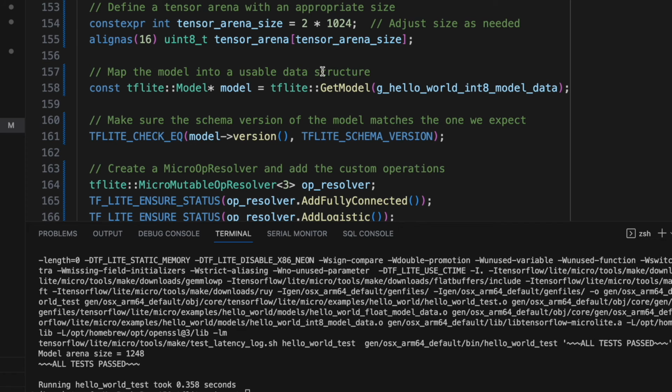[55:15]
You may be wondering, what if I decrease the arena size to only 1 kilobyte? It will probably give you an error. Yes, and it will say failure to allocate memory, and so it turns out we did need more. Let's change it back to 2.
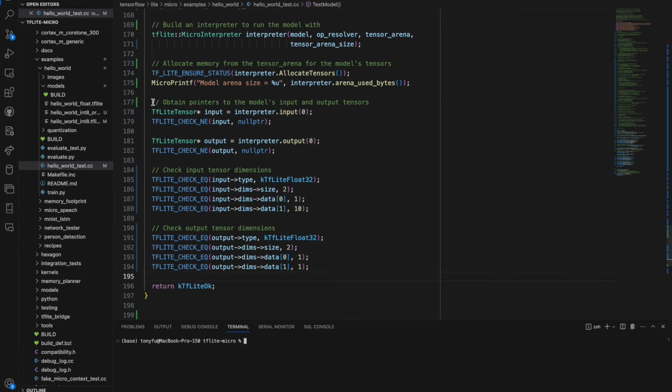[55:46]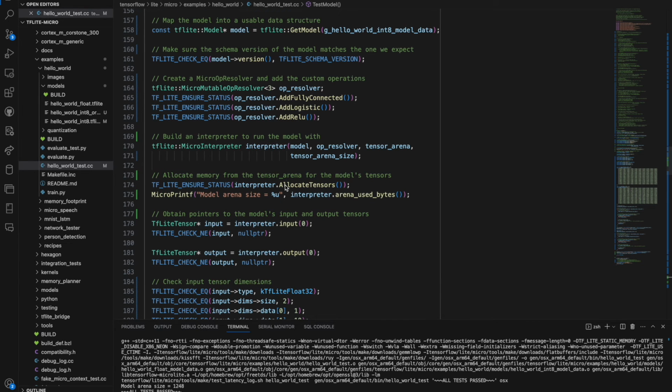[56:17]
And here I added a few more lines of code. We will set up the input and output tensors. And so first we obtain the pointers to those input and output tensors, make sure they are not null pointers. And then we begin checking the dimension and the type of them to make sure that they match the expectation. And so we can run the test again. And so all the tests have passed. And so that was great. But now we want to actually input some test data to this model to make sure that it actually works.
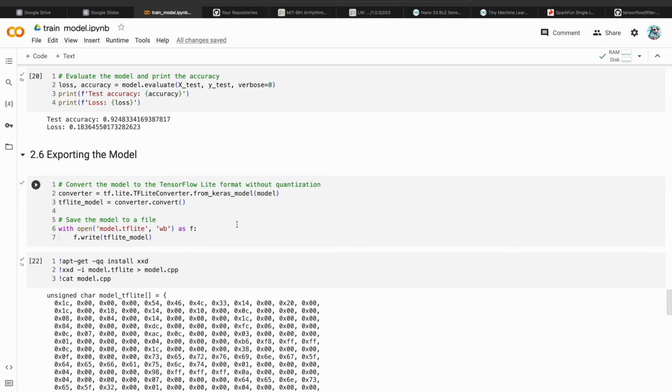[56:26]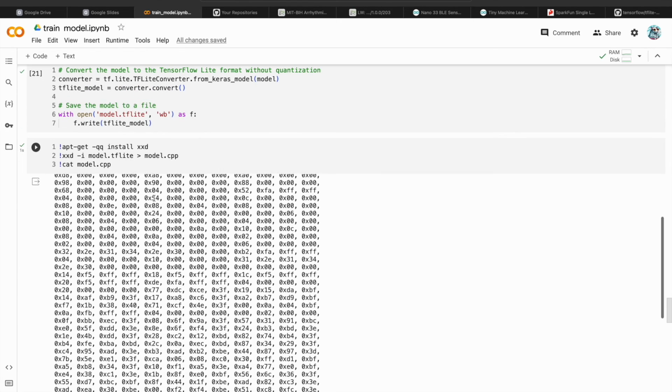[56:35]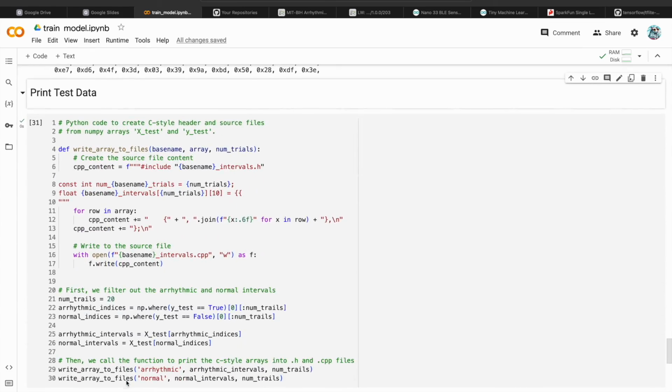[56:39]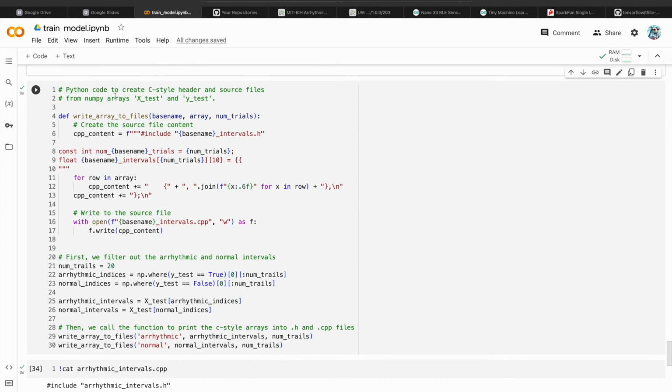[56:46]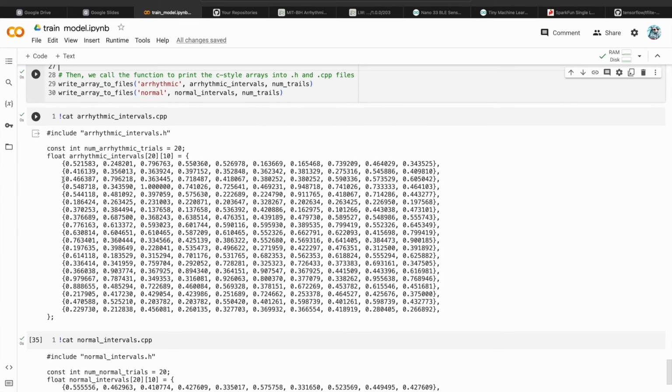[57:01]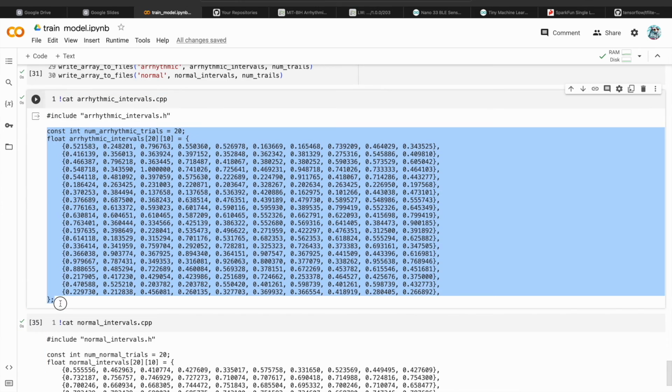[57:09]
So let's go back to our Colab notebook. So here we are. The last step that we did is we exported our model and hex dumped it into a CPP file. Following that, I added a few more lines of code to print out some test data that we can use in the unit test. Basically, we grab 20 trials of arrhythmic intervals, and then 20 trials of normal R intervals, and then we write them into a C-style 2D array format. And so you can just copy these into the test.
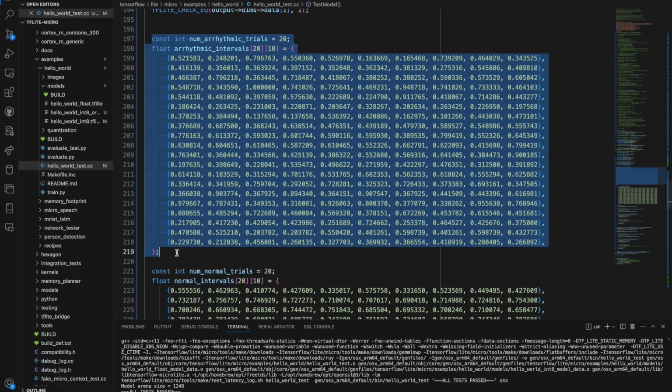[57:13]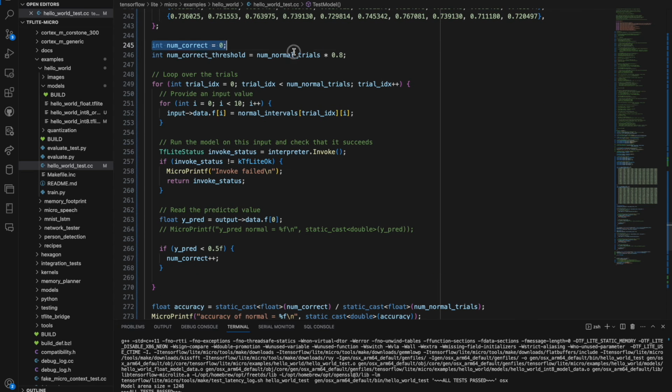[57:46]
So here I've already copied the two-dimensional arrays that we just printed in the Colab notebook. These are 20 by 10 arrays. Each row right here represents one trial, and all of these samples should give us an arrhythmia score hopefully greater than 0.5. And all these bottom ones are healthy intervals. Hopefully the model will look at it and output a predicted value under 0.5. And here, let's initialize these two. We want to have at least 0.8 accuracy. So if the model doesn't give us 0.8 accuracy, then the test failed.
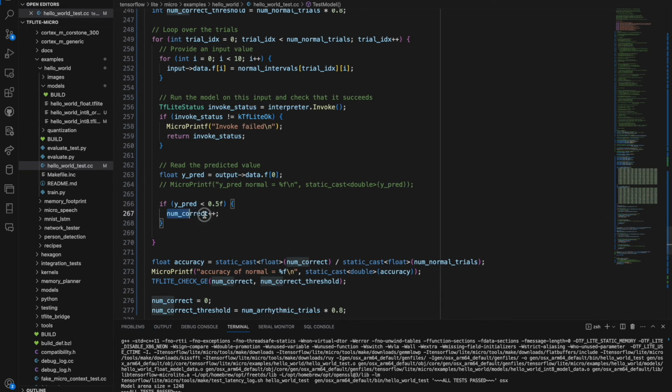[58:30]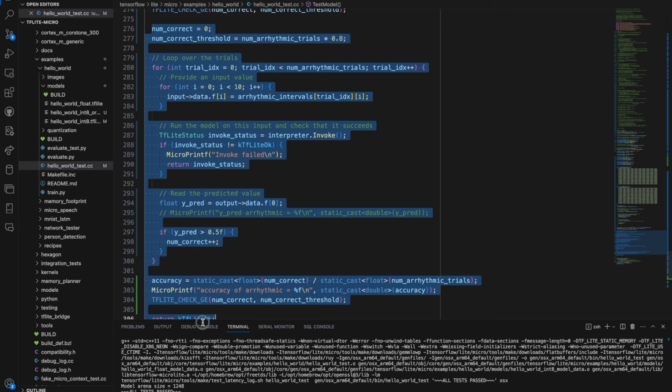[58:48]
And here we will loop over the trials, and for each trial we will put the input values into the input tensor one by one using this, and then we will run the model by calling the invoke method. And we can check if the model has failed or not. If not, we will move on to get the predicted value. And since we're iterating over the normal trials, the Y prediction should be less than 0.5, and then we will increment the number correct. And here we calculate the accuracy over here, and then print it using micro printf, and then we check if we have at least 80% correct. Down here we basically perform the same step but for the arrhythmic score, and we expect the prediction to be greater than 0.5. And so let's run this test.
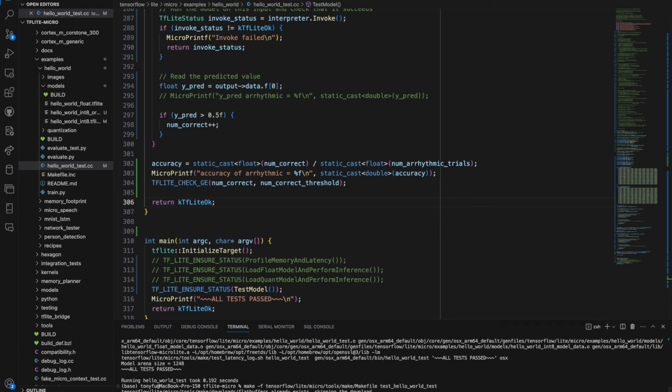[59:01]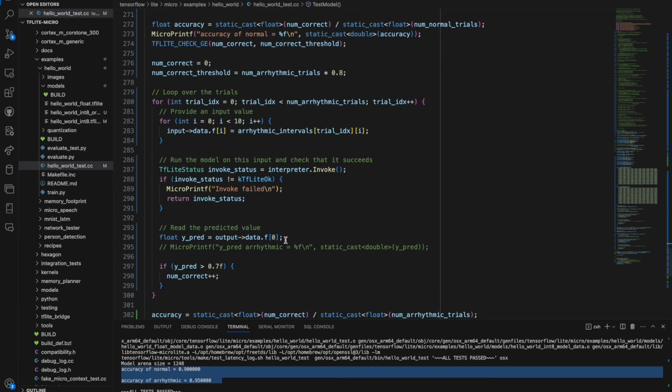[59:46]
Yeah, and so the test passed, and the accuracy of the normal trials is about 0.8, and the arrhythmic score is about 1. And so this kind of hints to us that we can probably increase this threshold a little bit. And so let's try 0.7. Sure, and so 0.7 gives us a decent accuracy in both classes, and so I guess 0.7 is the threshold that we will use. Feel free to try out different thresholds. But now that is how we can test the model on our local machine.
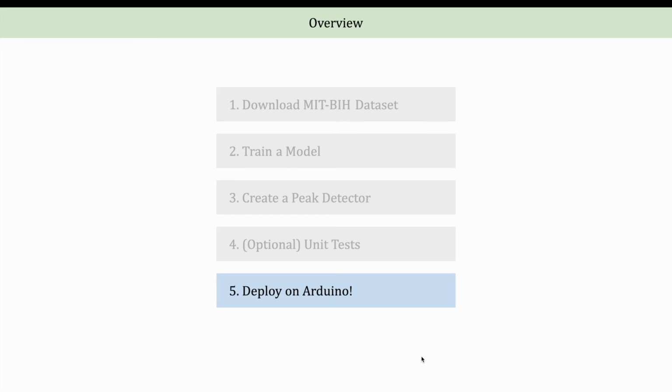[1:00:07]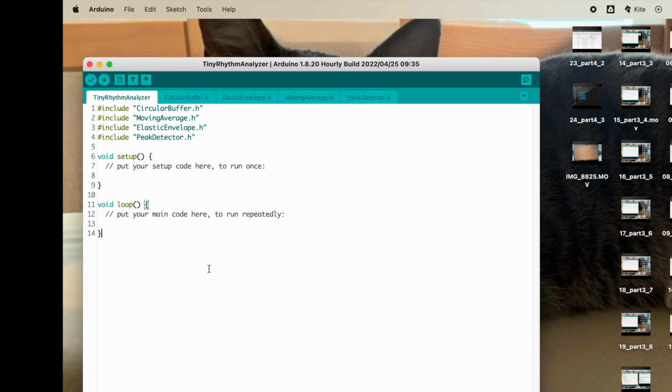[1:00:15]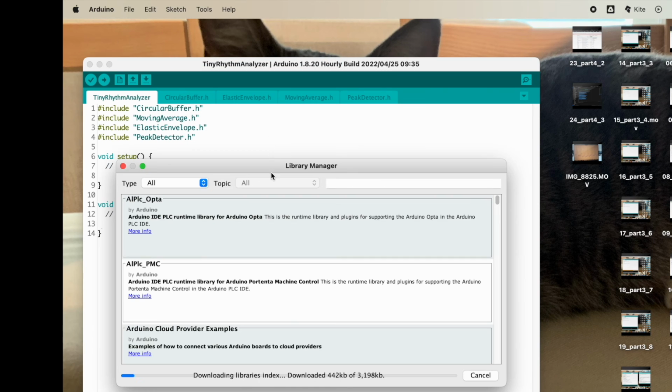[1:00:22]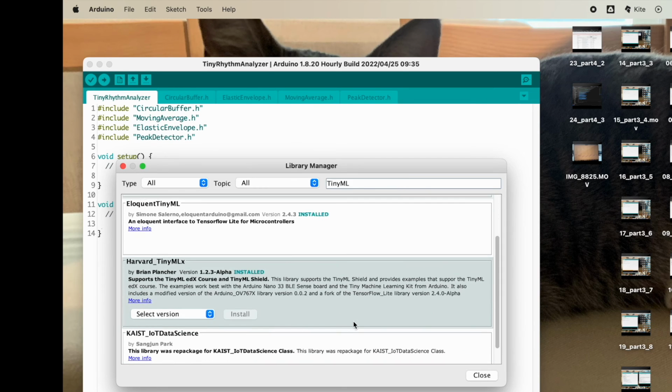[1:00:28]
And let's move on to part 5, where we can put everything together and deploy it on Arduino Nano. In this step, we will put everything together and deploy it on Arduino. Let's head to the Arduino IDE. If you haven't already, go to Library Manager and search for TinyML, and download this Harvard TinyML library.
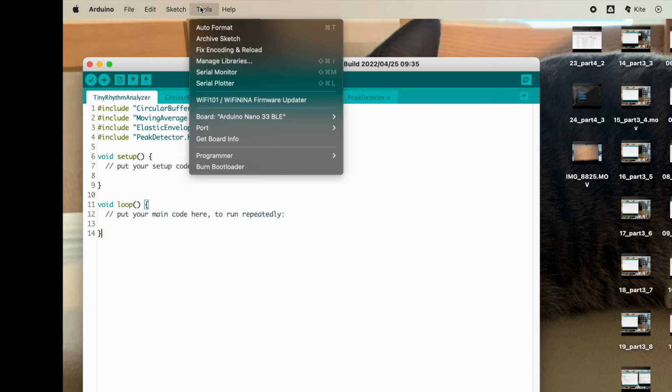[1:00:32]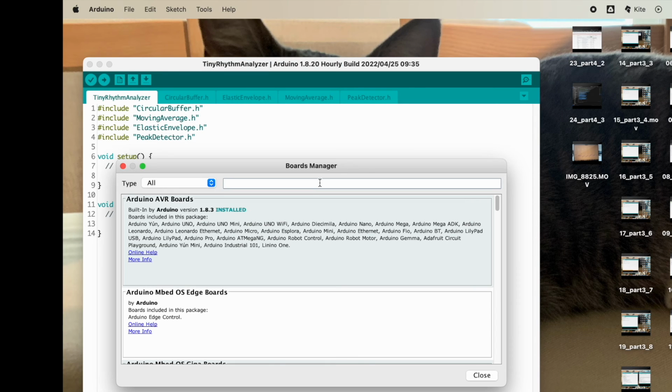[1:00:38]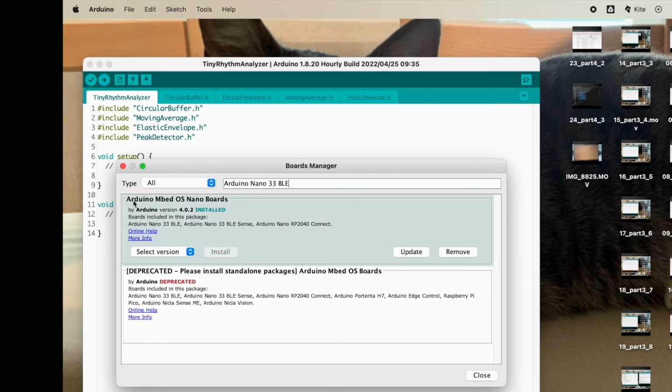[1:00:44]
And the next step, go to Board Manager. Search for Arduino Nano 33 BLE, and download this Arduino Mbed OS Nano Boards package.
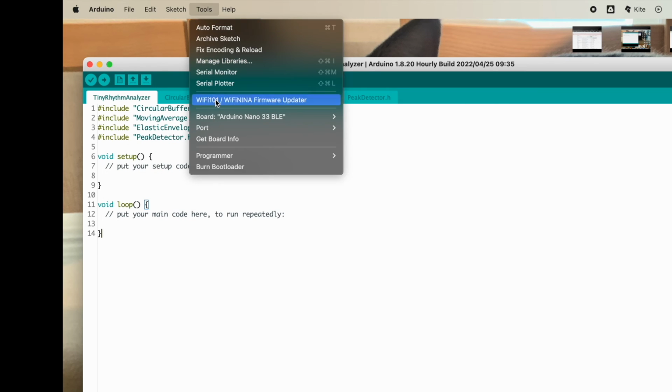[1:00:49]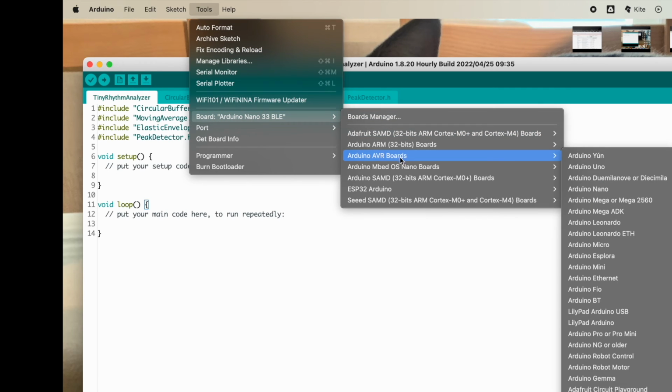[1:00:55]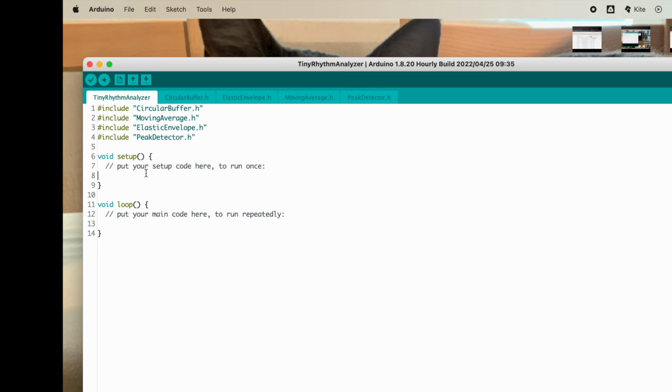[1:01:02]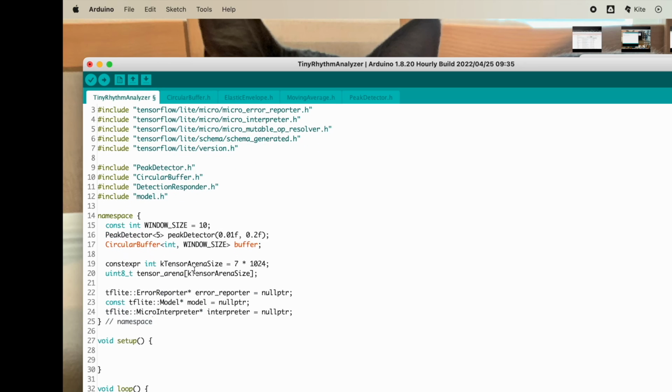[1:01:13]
And so in Tools here, let's select our board to be Arduino Nano 33 BLE, and we can start coding. At the top of the sketch here, let's include all the necessary headers. And next, we will declare some global variables. To avoid name collision, it's best to place them inside an anonymous namespace.
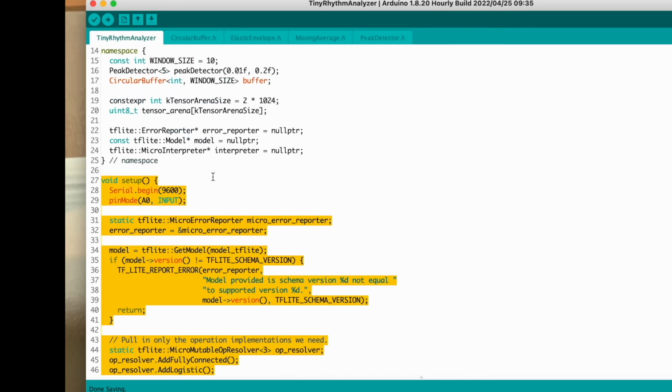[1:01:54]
This will include the window size, which we set to 10, a PeakDetector, another CircularBuffer, and then we also have to define the tensor arena size here. Let's set it to 2 because we just found out that 2 is a pretty good number. And then we also have the error reporter, the model, and the interpreter. These are so far initialized to null pointer, and we will initialize them in the setup function.
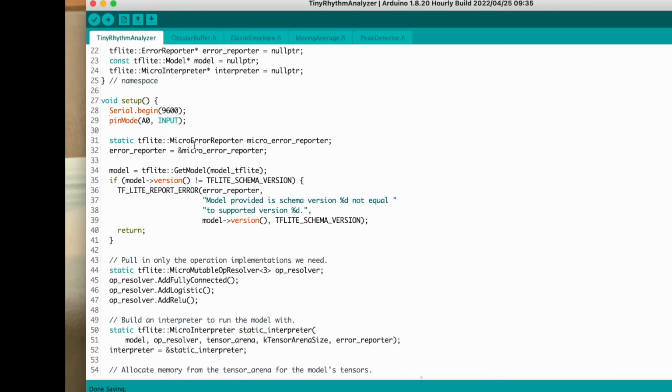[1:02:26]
And so this is the setup code. We want to be able to communicate with the laptop, and so we need to establish serial communication at the start of the program, so let's set the baud rate to 9600. We also want to be able to receive input signal from analog input 0, and so we have to configure it to be an input. This is actually, I believe, not necessary, but it's just good practice to put it there.
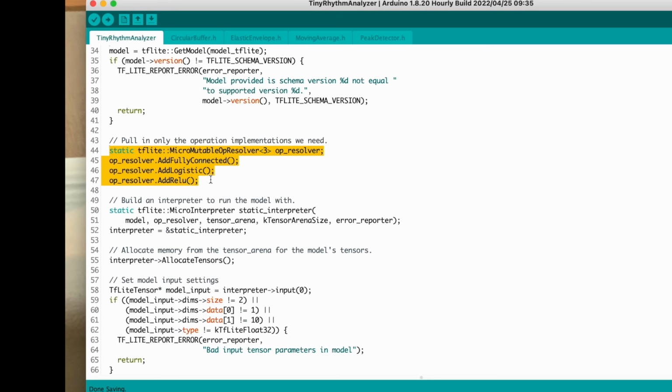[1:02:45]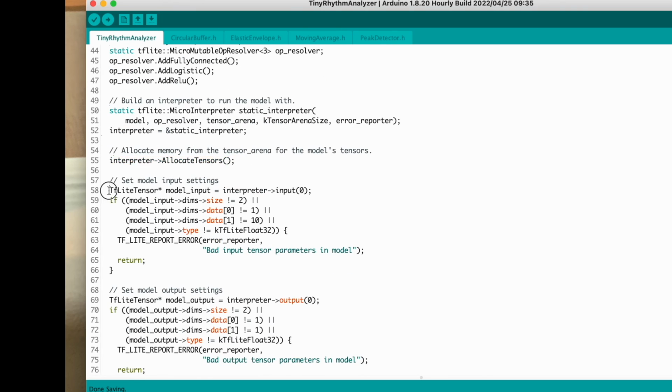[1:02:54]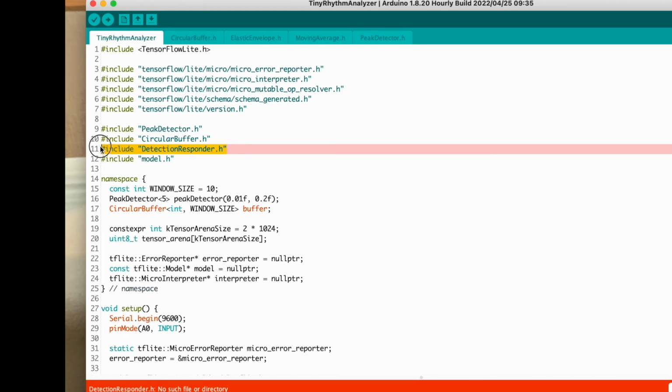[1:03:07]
Here we initialize the error reporter. We also call the get model and then check the version. If the version and the schema match, this is very similar to what we did on the local test. Here again, we add the necessary operators, and we initialize the interpreter. We allocate the tensor, check the dimensions, and set up the model output setting. And so let's click verify to check if the code works. Oops, sorry, let me delete this.
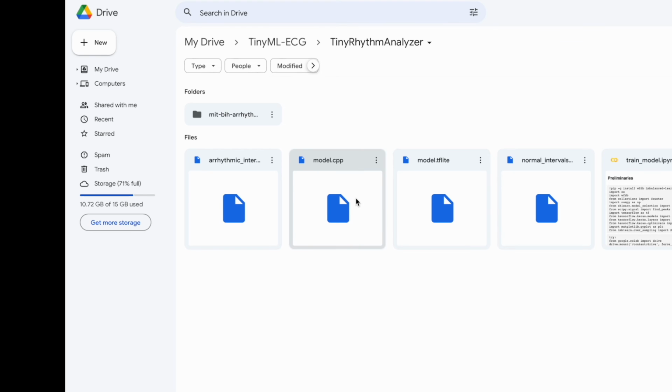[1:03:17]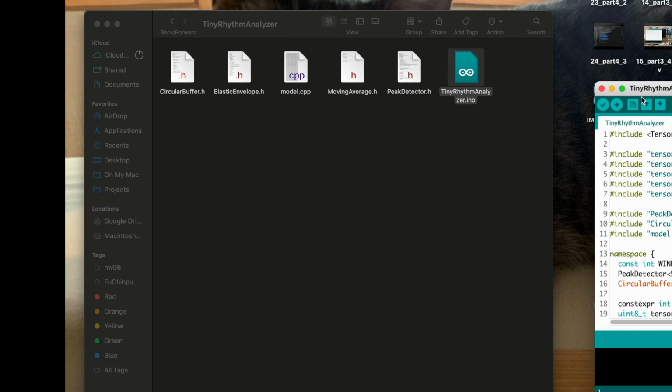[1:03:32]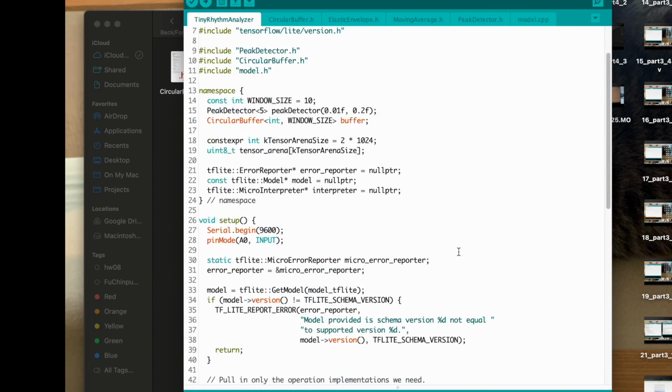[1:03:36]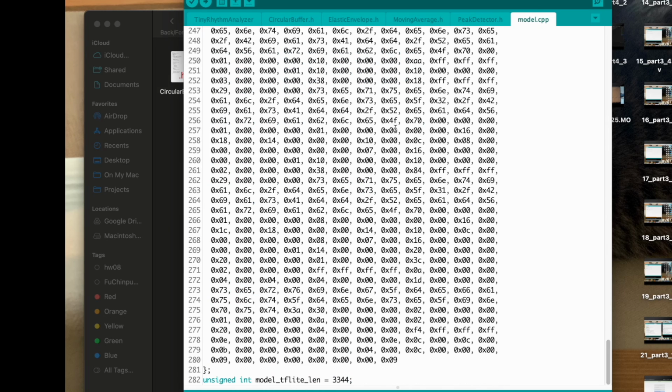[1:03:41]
And also, we haven't included our model. Let's head back to Google Drive and now download this model.cpp, and we will add it to our tiny rhythm analyzer. And you might need to close and reopen the Arduino IDE. Let's open it right here. Okay. As you can see, our model CPP is right here.
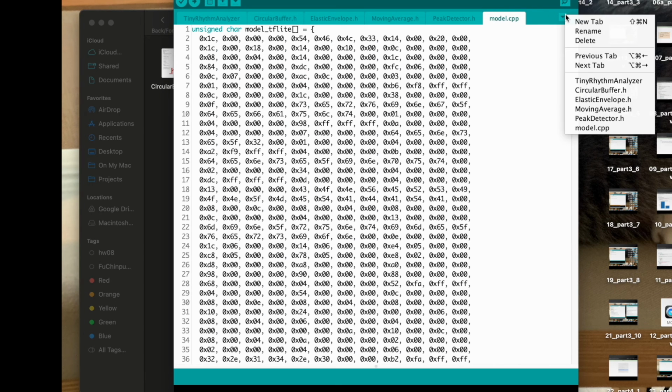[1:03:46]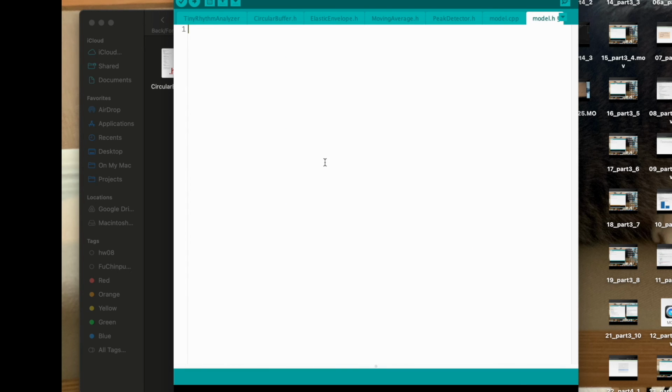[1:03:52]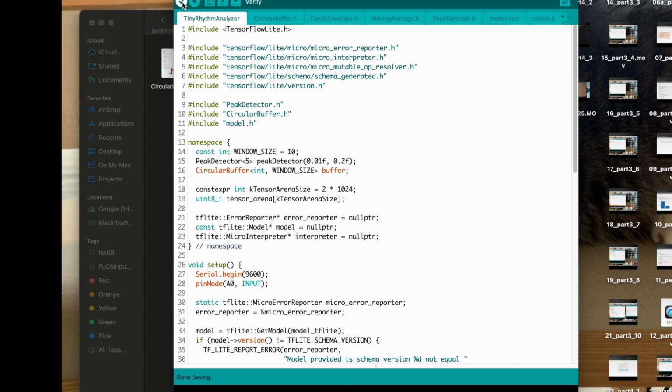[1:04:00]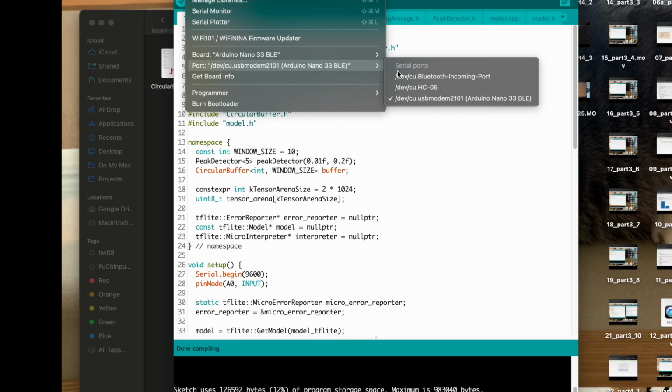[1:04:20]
And so let's create a header file, name it model.h, and paste the following code to this header file. Now click here to verify it again. And so, yeah, the code did compile, and so let's try to upload this to our Arduino Nano. So plug in the Arduino Nano, and it should show up in the port over here. See? And then click upload.
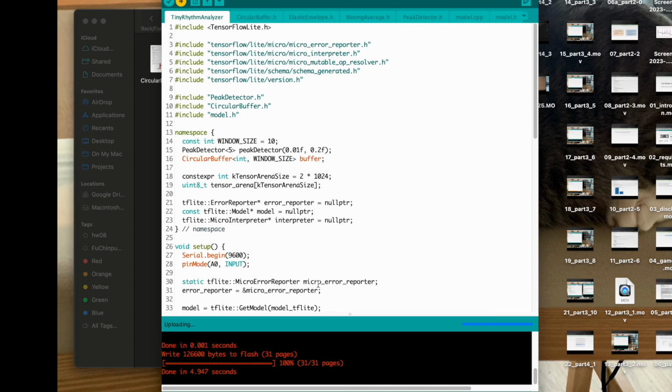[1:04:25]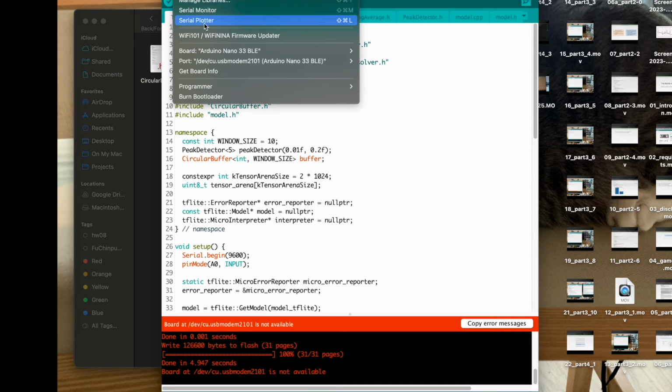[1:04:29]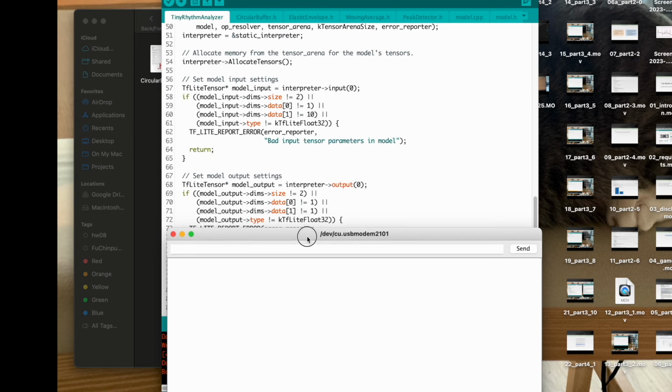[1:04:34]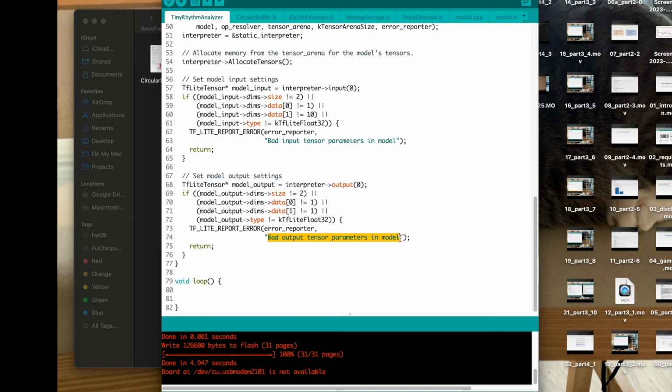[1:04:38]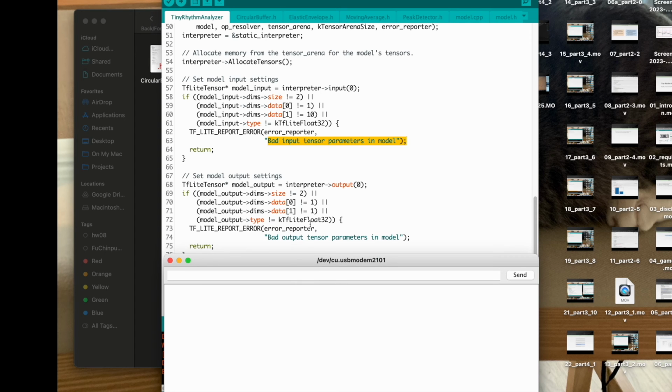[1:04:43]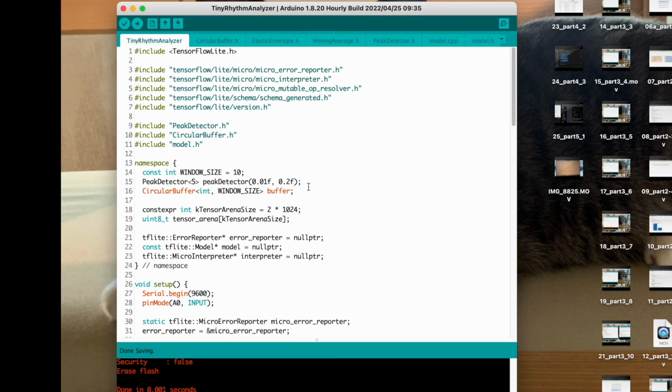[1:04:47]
And now open the serial monitor. Here, if we didn't get any text, then it probably indicates that we haven't got any of these error messages. So we should be fine to proceed to the loop. And sorry about that, I forgot to add the elastic envelope here. So please put this into the global namespace here.
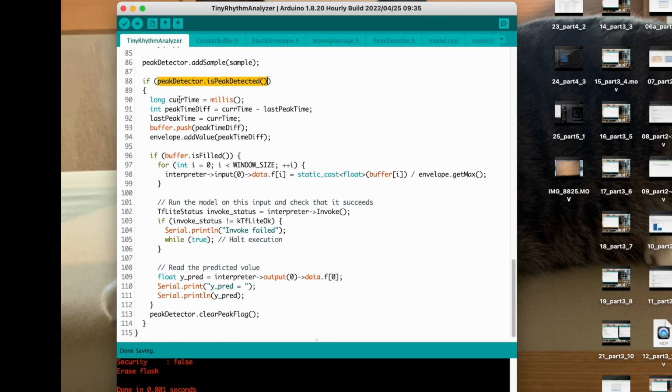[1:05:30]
And down here, I have added more code in the loop. And this is how we do peak detection. We first initialize a latest peak to the current milliseconds, and then we're reading one sample. We can optionally print this to the serial monitor, and then we pass this sample into the peak detector. And if the peak detector detects a peak, this flag will be raised. And by the way, remember to clear this flag at the end of this condition, otherwise you will keep entering this condition over here.
We'll get the current time and then take the difference. And this time difference will be our RR interval. And so we will push this RR interval into the buffer. And then we will also add this RR interval into the envelope. This is mainly to keep track of the current maximum so that we can normalize the RR interval later. If the buffer is full, that is, if we get all 10 data that we need, then we can run the model for inference. Here we pass in each RR interval one by one to the data, and then we run the inference by calling the invoke method.
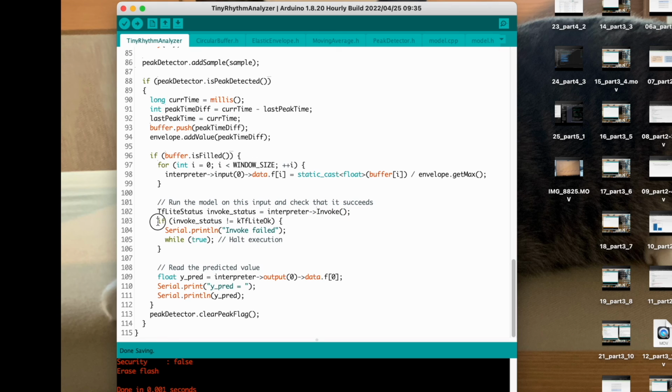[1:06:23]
Check if it has failed. If it fails, then we halt the execution here, and then we get the result from the model, and then we just print it to the terminal. And at the end, remember to clear the flag. And so let's upload this code to the Nano and see if it works.
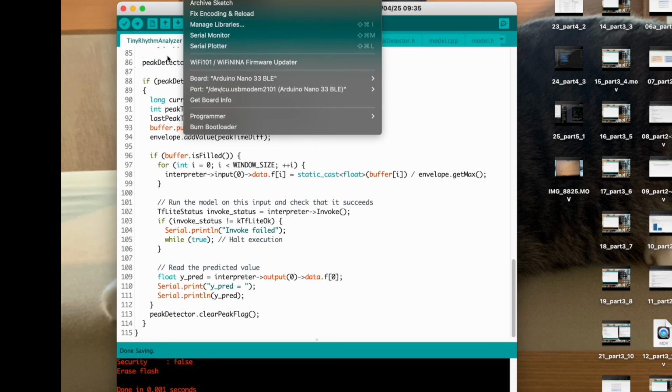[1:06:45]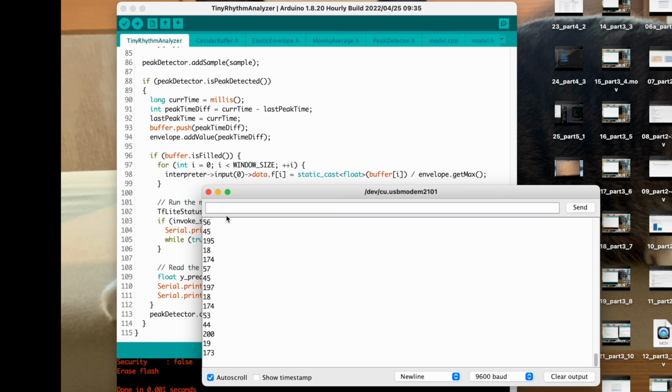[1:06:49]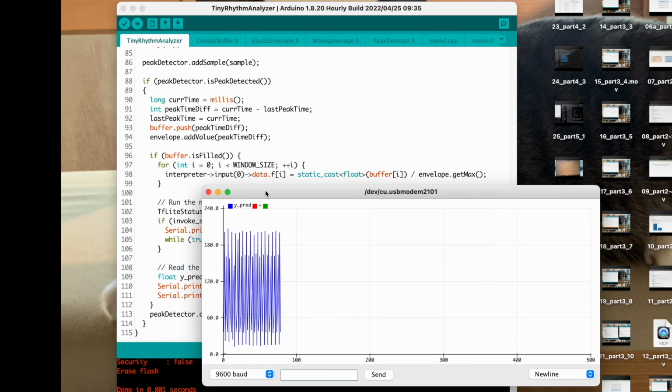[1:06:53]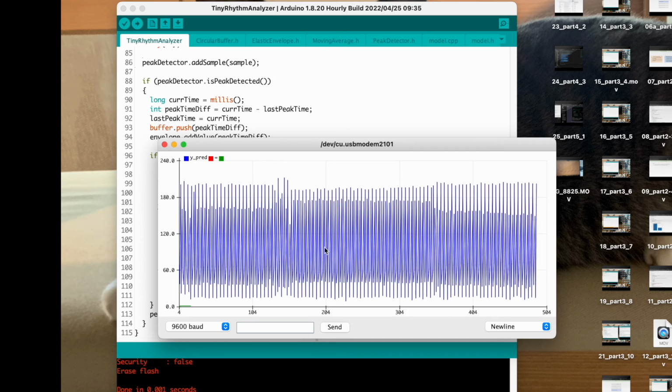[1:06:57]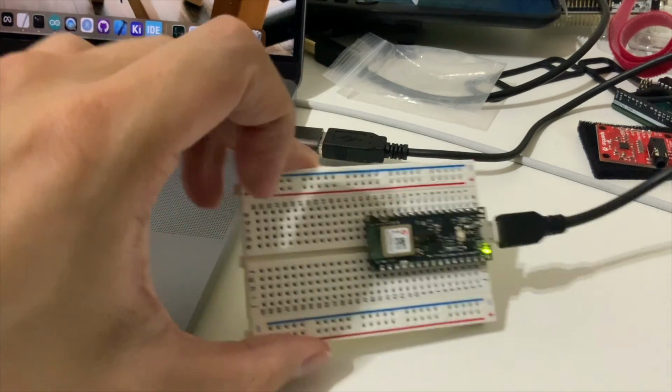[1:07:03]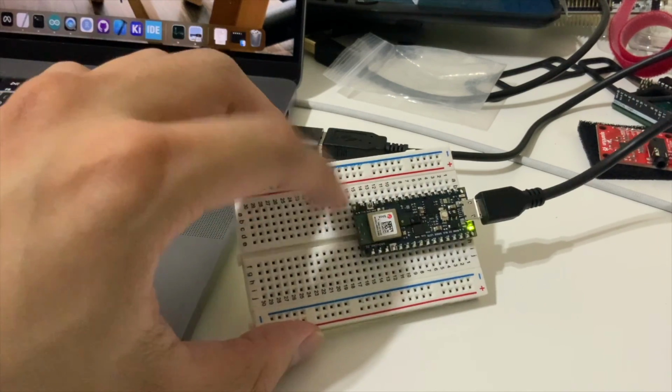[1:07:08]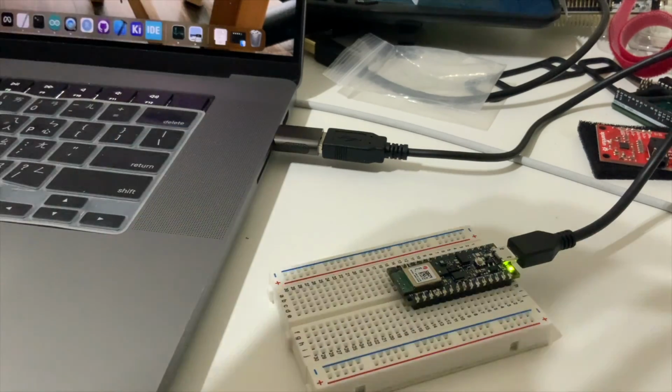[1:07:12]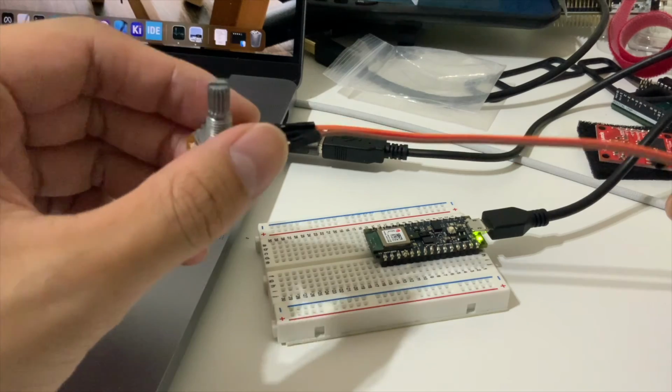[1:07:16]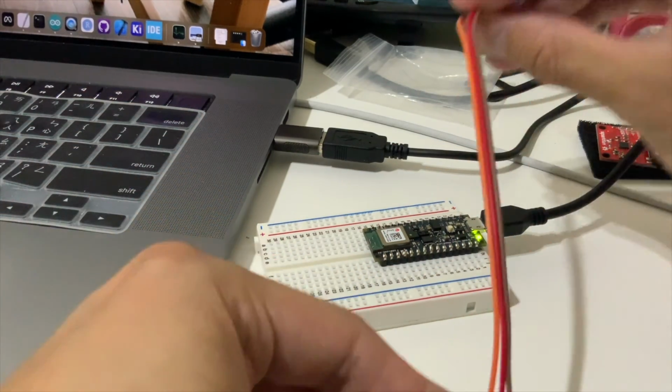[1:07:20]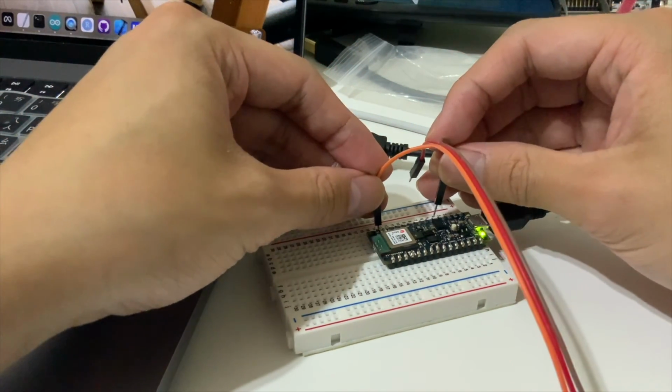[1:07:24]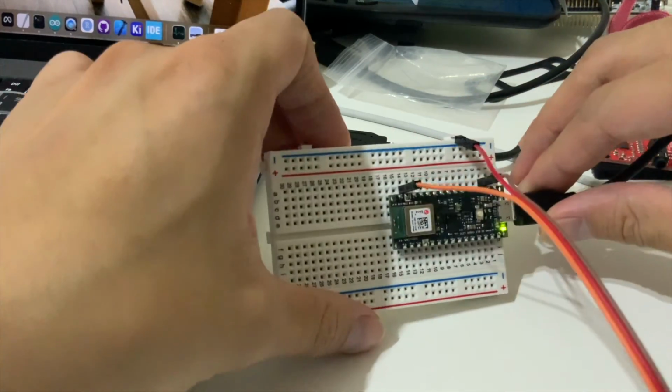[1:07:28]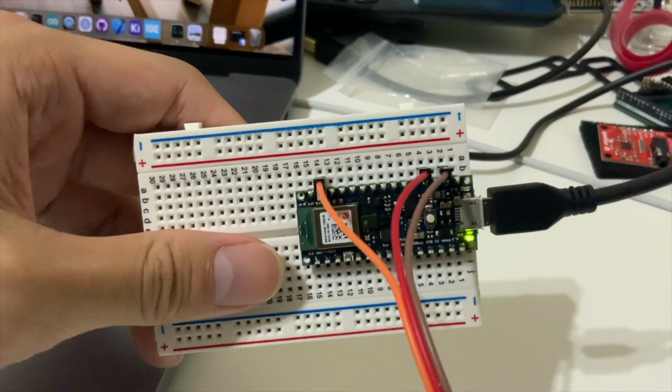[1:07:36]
So right now, let's look at the serial plotter. All we get is garbage because we haven't connected anything to analog input 0. And so here I have my Arduino Nano connected to the computer and also put on the breadboard over here. And here is a potentiometer. It has three terminals. I want these two to connect to the ground and the 3.3 volt pin respectively here. And then this should connect to analog 0, so like this.
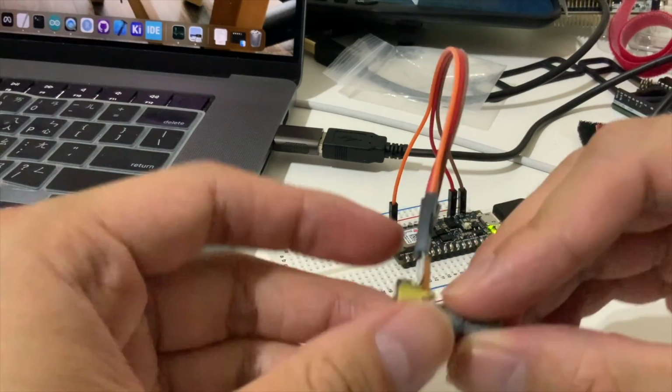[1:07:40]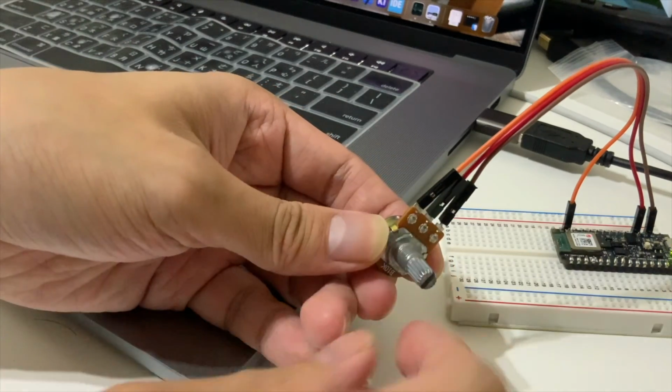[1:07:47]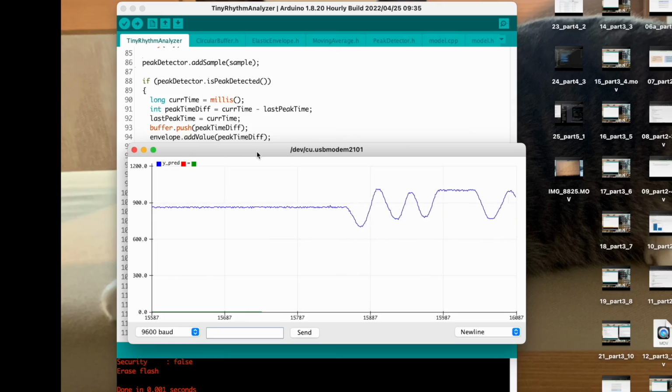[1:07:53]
And so right here, if I rotate the potentiometer, you can see that on the screen I can mimic a sine wave.
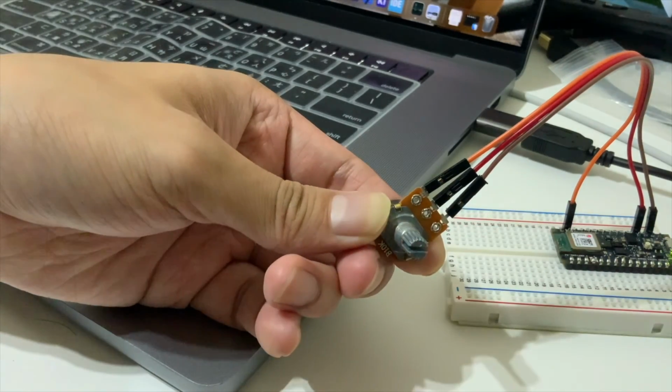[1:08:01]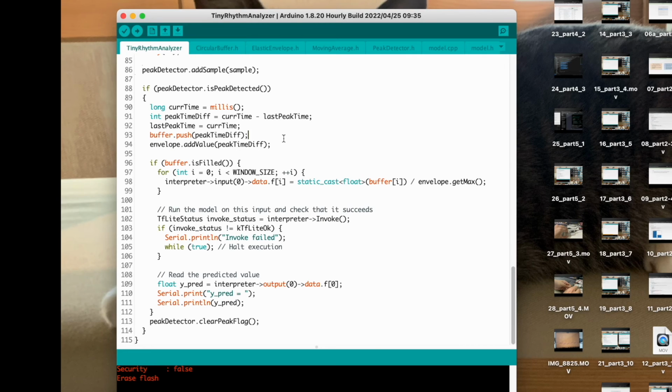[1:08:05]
However, we don't have an intuitive way to understand the model's output, right? And so let's use the built-in LED on the Arduino Nano to indicate the output. We can create two files. We will call them detection responder, right? The header file here, let's create it.
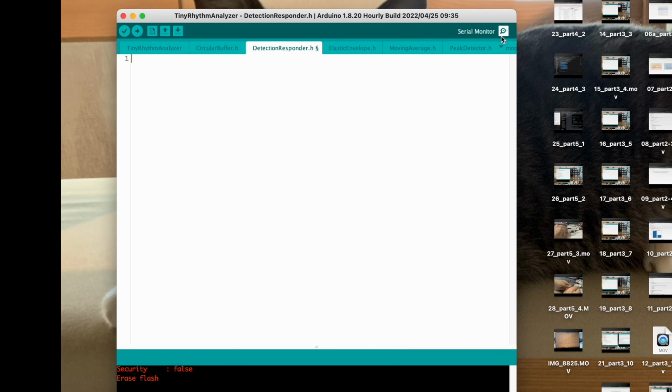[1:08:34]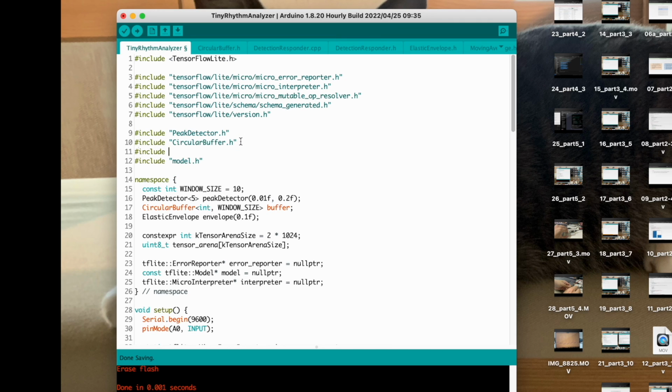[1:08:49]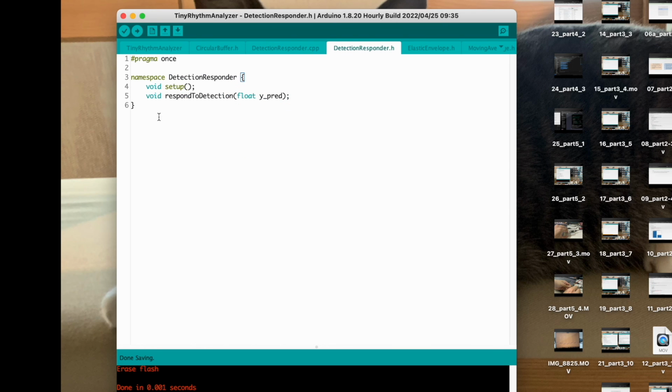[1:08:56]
Let's call it detection responder.h and detection responder.cpp. And here in detection responder.h, we will expose two functions, setup and respond to detection.
Here in .cpp, we aim for the green LED to be on when the output indicates a normal sinus rhythm. That is when the output is less than 0.5. So I should actually use 0.5 here. On the other hand, we should turn on the red LED if the output is greater than 0.5. So this red stands for R, G stands for green, and those are macros that are included in the Arduino.h header file. And remember that these LEDs are active low, so you have to set it to high to turn it off.
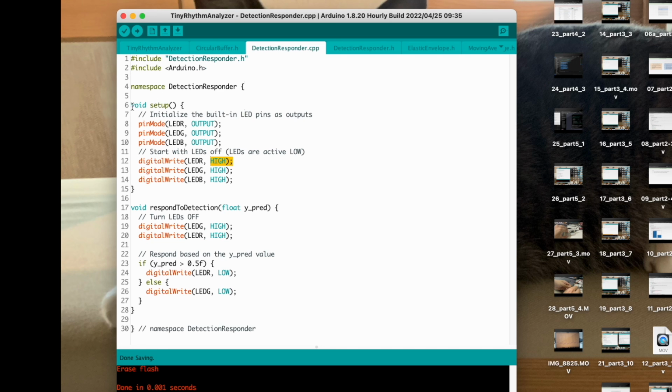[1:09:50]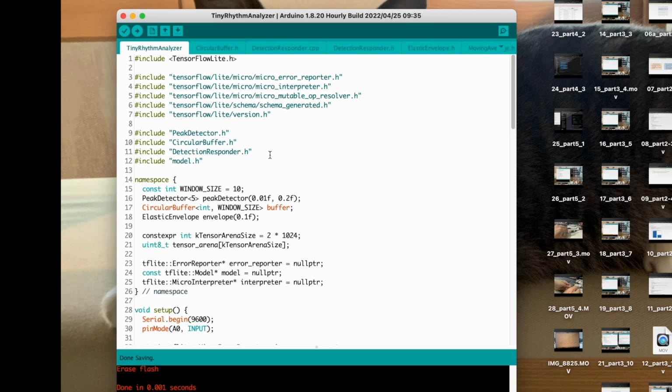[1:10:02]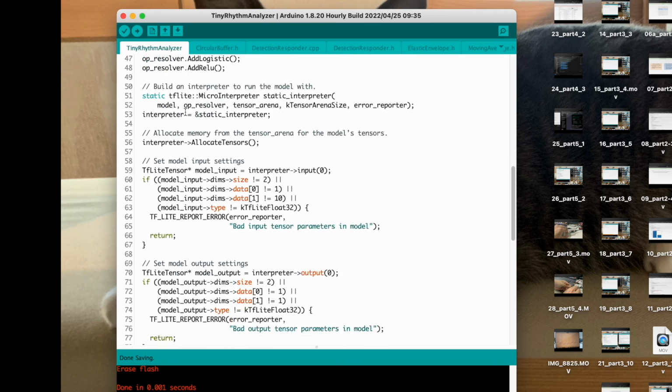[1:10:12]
So here during the setup, we turned all of them off by setting them to high, and then here we turn on the respective LED by setting them to low. And here back in the main sketch, I include the detection responder header file. And then let's scroll all the way down to the setup function. At the end of the setup function, we call the setup function to turn all the LEDs on the board off. And here, let's comment these two out. Instead of printing the prediction, let's just pass the prediction to the detection responder, and it will turn on and turn off the LED correspondingly.
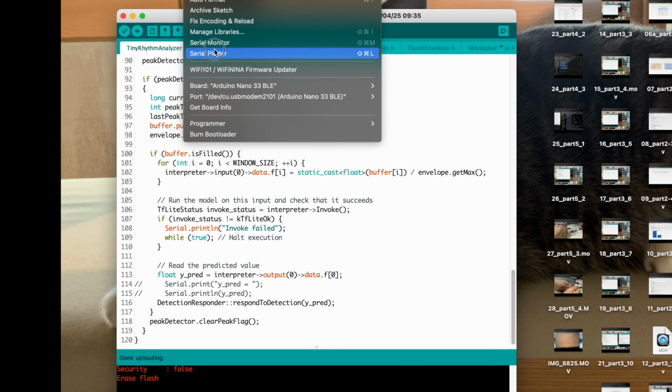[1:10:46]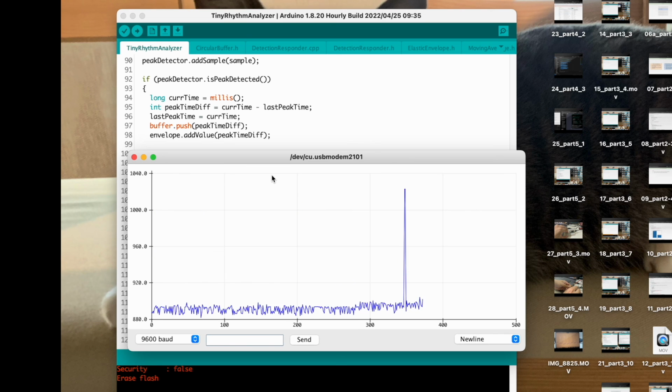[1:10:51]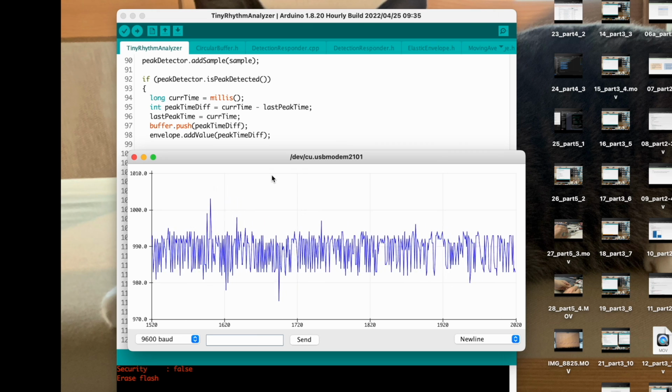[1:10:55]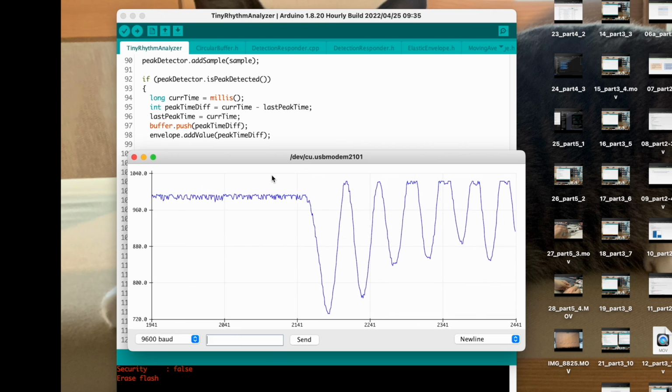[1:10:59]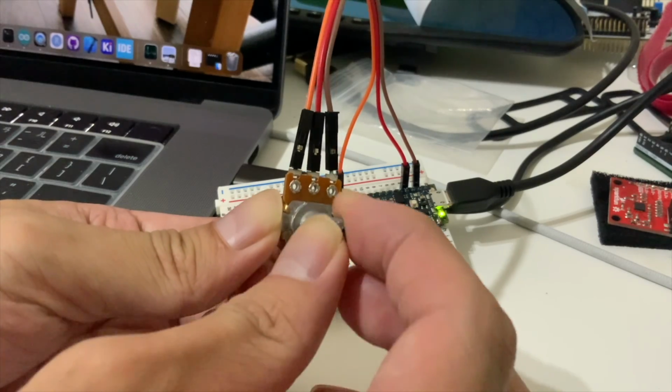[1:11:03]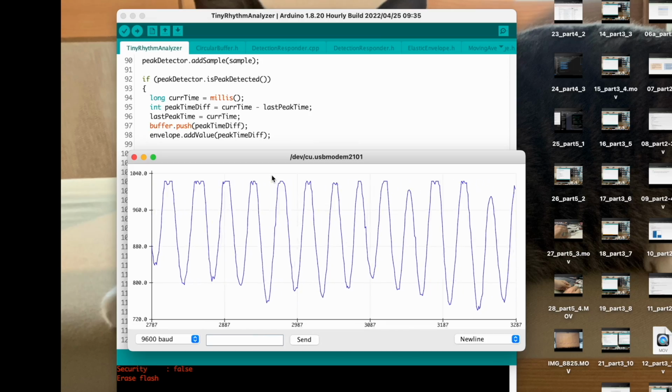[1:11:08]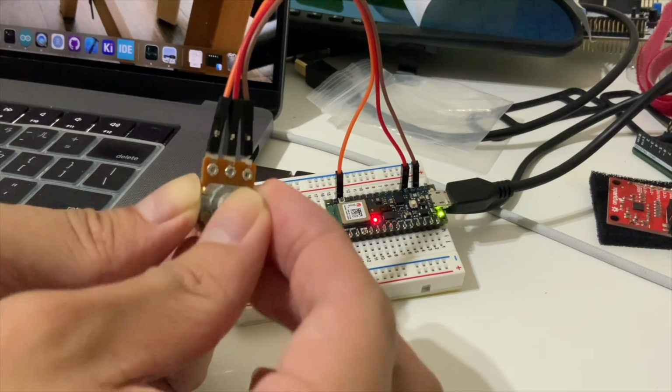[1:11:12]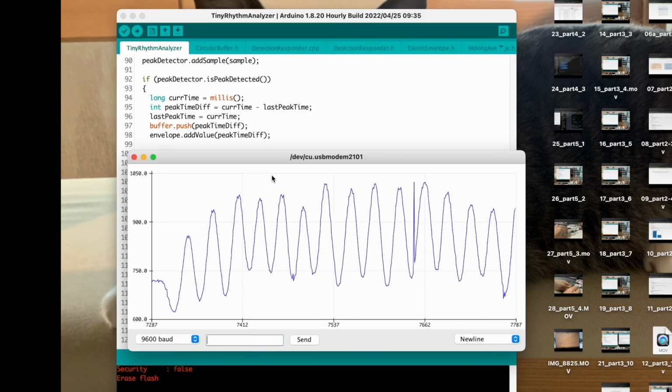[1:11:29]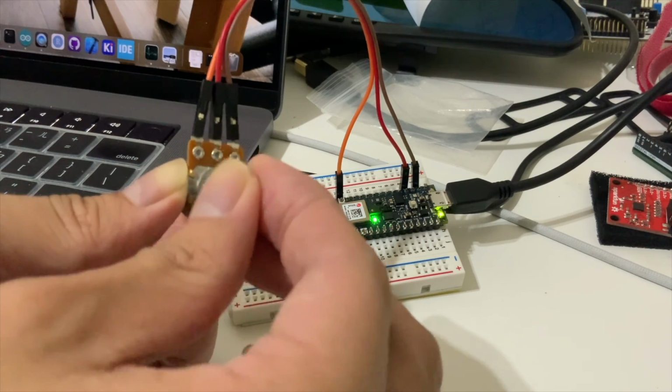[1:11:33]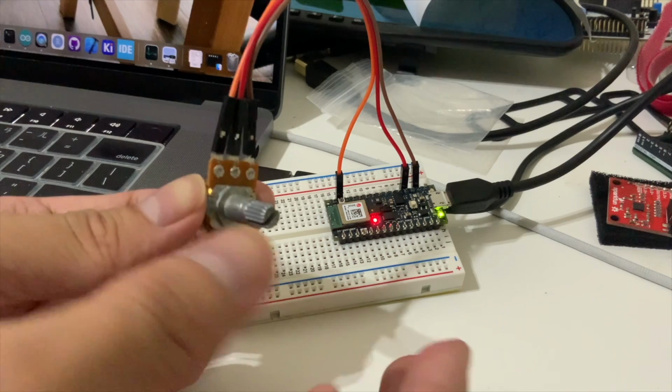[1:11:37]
And so let's upload this code to our Arduino. Let's hit upload. And let's check out the serial monitor here. And I will begin to simulate a heartbeat by a sine wave motion here. As you can see, it now turns green. Now if I stop, it turns red, and if I go back to normal sinus rhythm, it turns green again. If I stop, it turns red. Yeah, so that was fun.
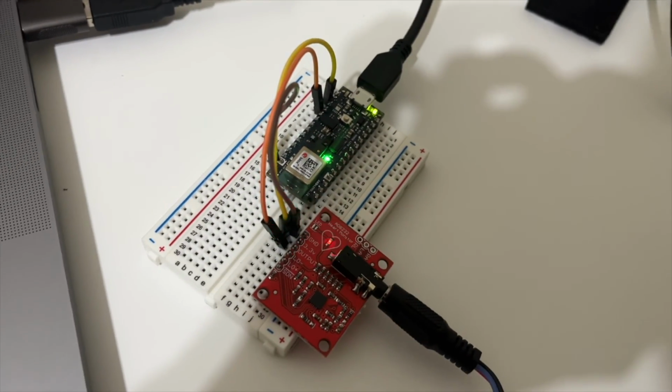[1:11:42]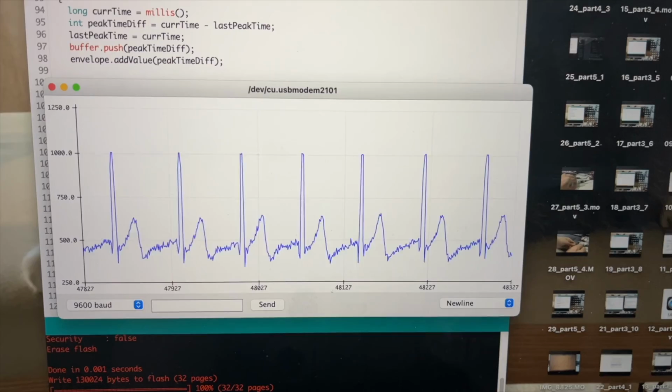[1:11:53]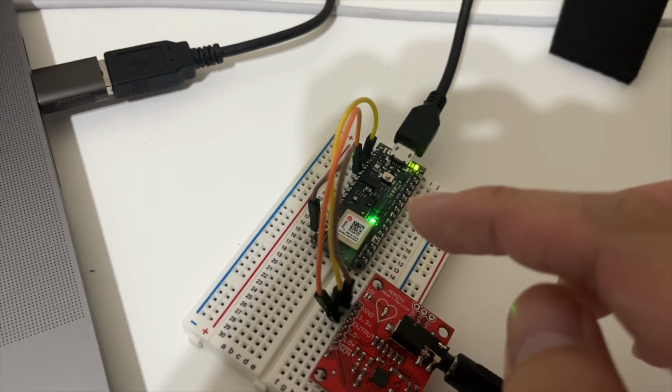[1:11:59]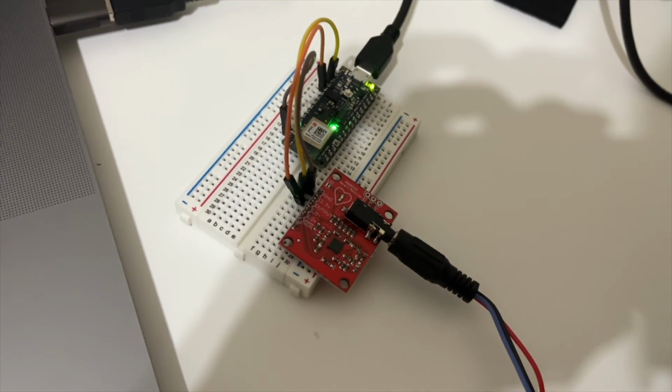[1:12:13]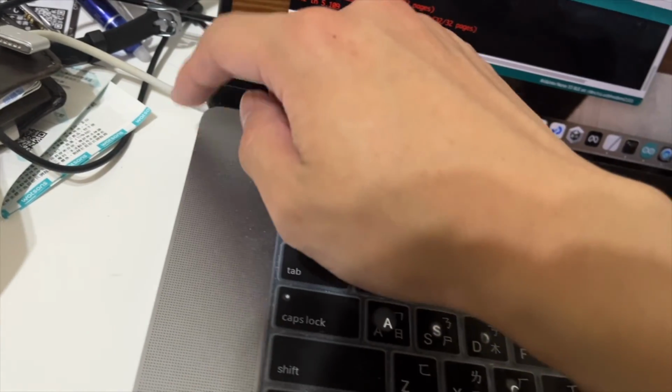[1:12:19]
And here also, if you have one of these ECG sensors, feel free to hook it up to the Arduino and test it out yourself. And here is my heartbeat. It's pretty regular, and so the light turns green. This is expected. I happen to know that I don't have any cardiac arrhythmia, and so this is expected. But again, please do not use this as a diagnostic device. And also, when you hook it up to yourself, please avoid electrocuting yourself. Currently, I would advise people to disconnect their laptop when they do this.
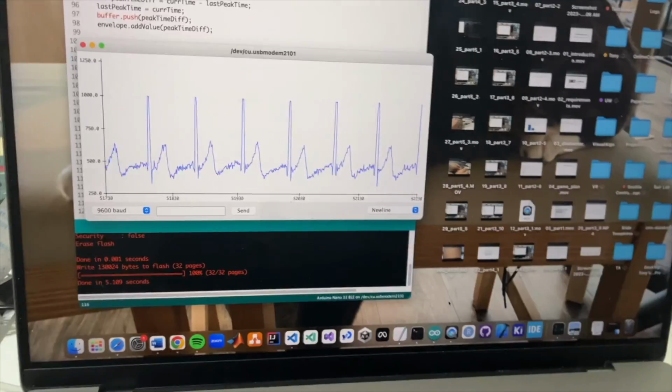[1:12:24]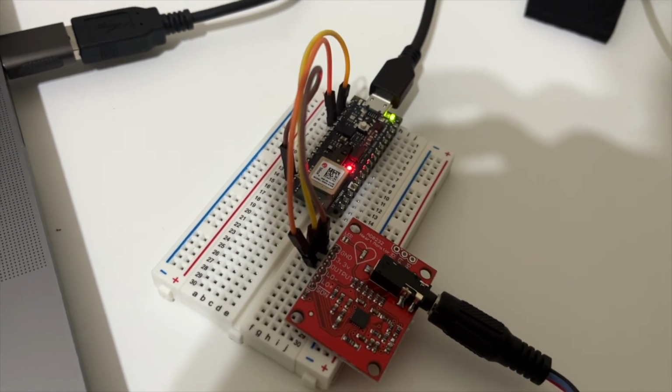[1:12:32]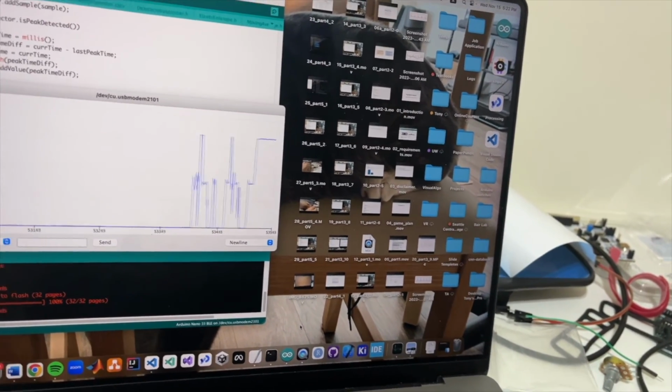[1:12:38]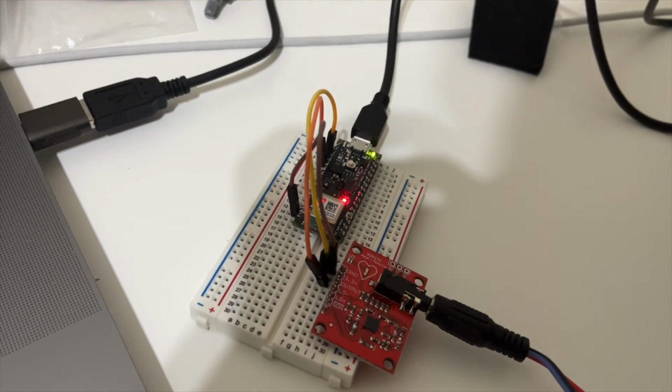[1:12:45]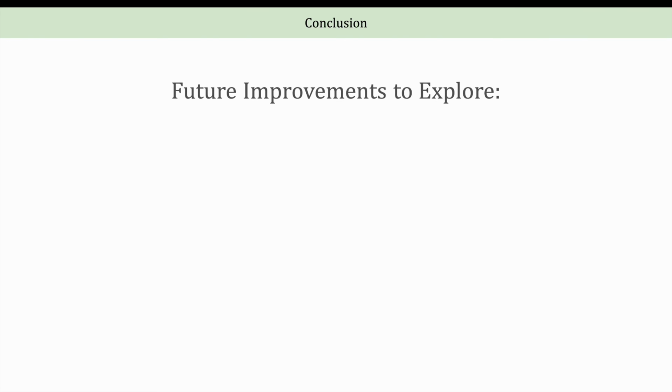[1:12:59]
And right here, if I just remove one of the electrodes, as you can see, I messed up the signal, and the light immediately turns red. And what would happen if I put it back on? Okay, let's wait for a second. It should turn green. Yep, that's it. And so this concludes our tutorial on creating a basic arrhythmia detector.
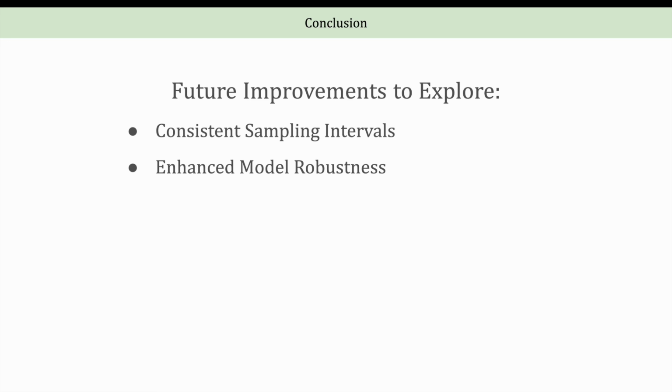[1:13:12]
There are several aspects that could be improved. In the Arduino sketch, sampling intervals are not consistent, and so we can improve that. Additionally, it's relatively easy to mislead the model into thinking that a signal is a normal sinus rhythm using a potentiometer. So we will have to address that too to make it more robust. Also, the issue of drifting baseline remains partially addressed. Although the ElasticEnvelope's dynamic threshold provides some help, it will be helpful if we can remove the baseline of every signal.
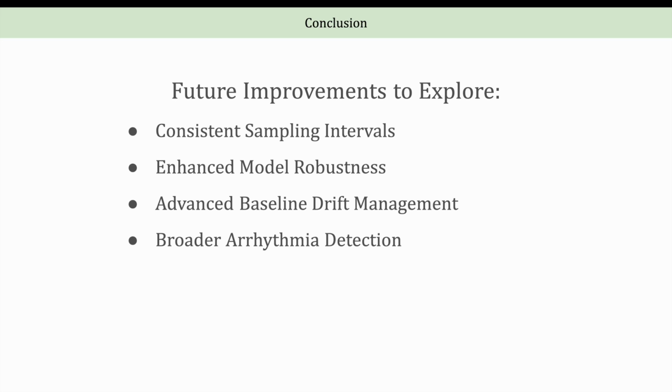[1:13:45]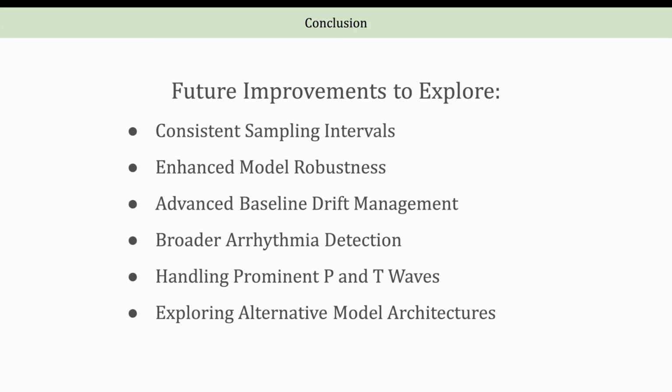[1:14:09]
It's also important to note that the project focuses on only detecting the PVC arrhythmia, leaving out other types of arrhythmia. And also, the peak detection method may not be effective for everyone, especially for those with really prominent P or T waves that could be confused for R waves. And lastly, as I was mentioning, a 1D convolutional model or an LSTM model will probably be more suitable for time series data like this. And so that's something worth trying as well.